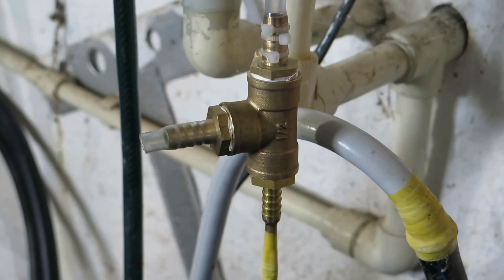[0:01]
Hi, so I need some source of vacuum. I can get some cheap vacuum pumps, obviously, but you need to maintain them if you want to use them for vacuum distillations or something like that. So I was thinking about aspirator pumps. You can buy them cheaply also, but they are very simple to make, so I made this thing.
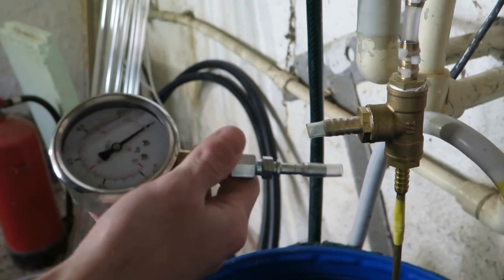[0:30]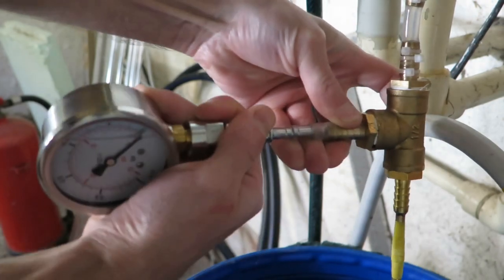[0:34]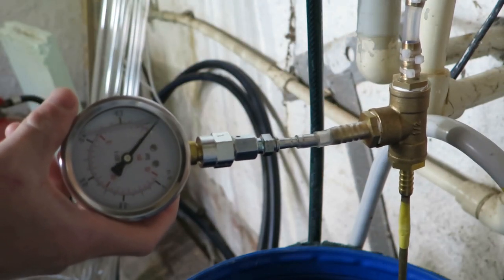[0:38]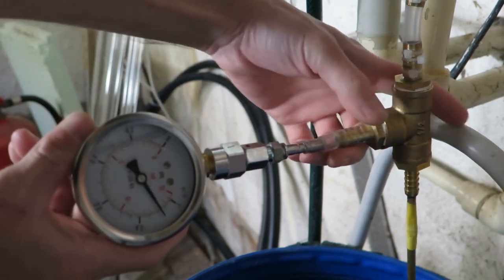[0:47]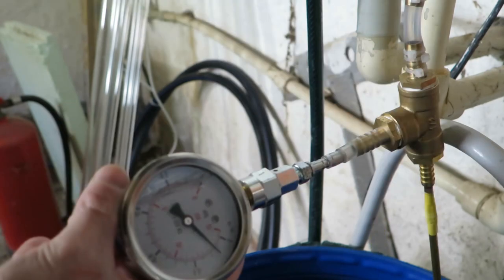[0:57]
So here I got the manometer. I will connect this just like this. It'll probably leak a little bit, but what can you do? And turn this on. And you can see that you can get quite low pressure there. As you can hear, it's very quiet.
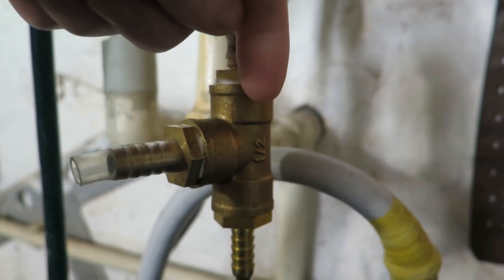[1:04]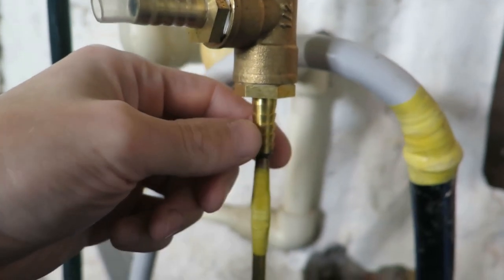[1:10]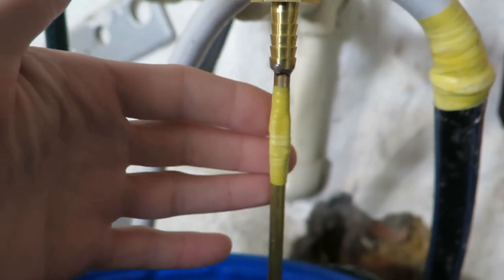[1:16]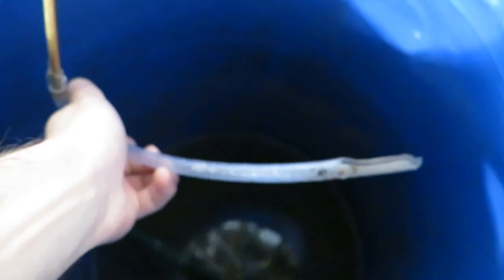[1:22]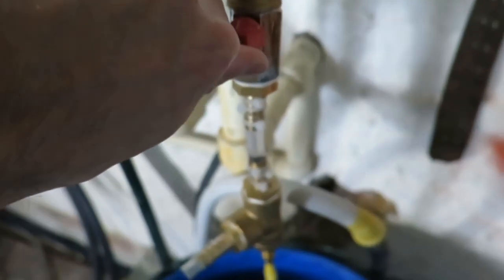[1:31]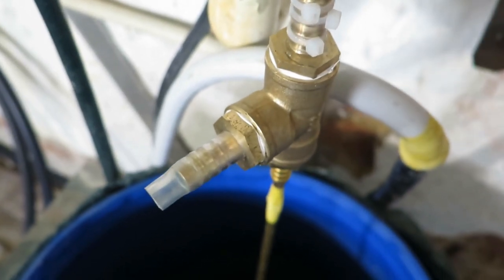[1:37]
So the way this works is you have a nozzle and high pressure water that will make a high velocity water stream, and that will pass through ideally an expanding diameter hole or tube, and then just exit through a hose to some kind of container or outside. So I can just turn the water and this thing will work. There are no moving parts, so nothing is going to break here, only the water will smell of your chemicals.
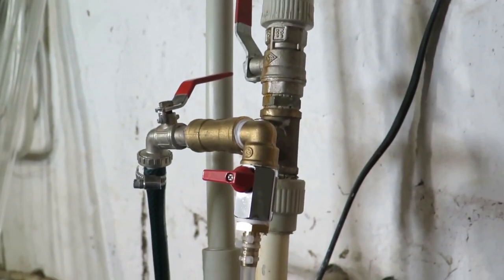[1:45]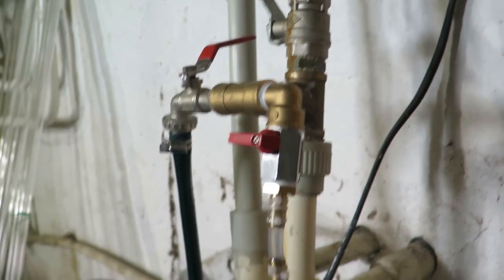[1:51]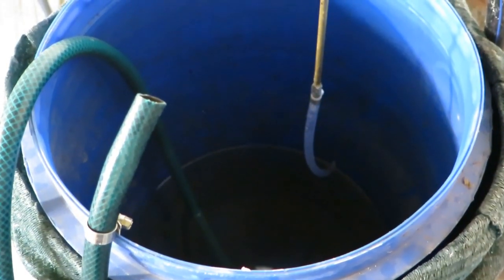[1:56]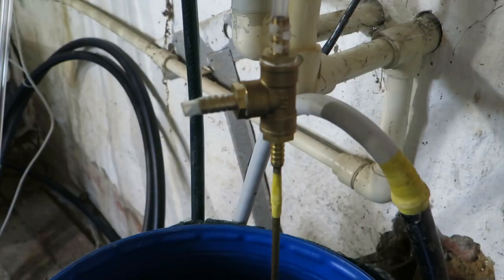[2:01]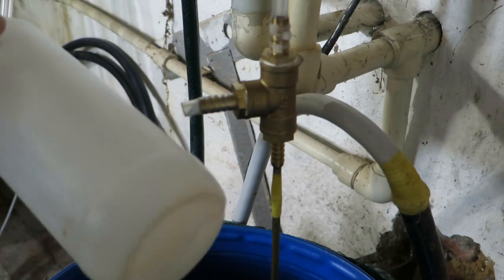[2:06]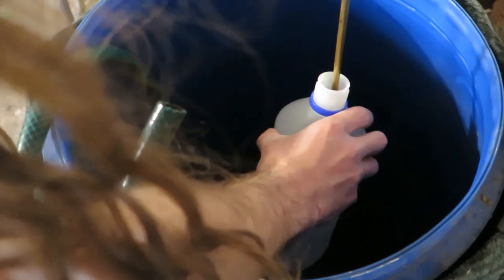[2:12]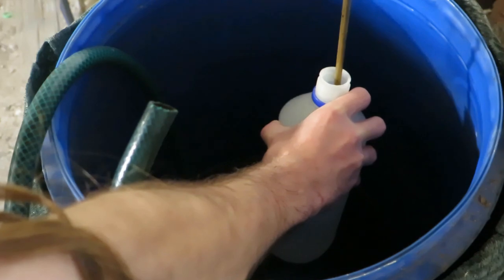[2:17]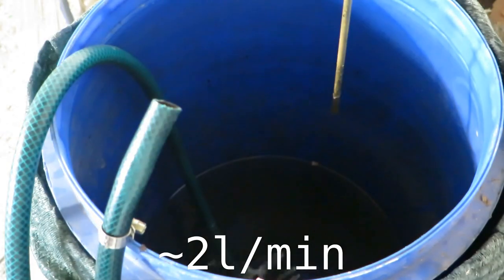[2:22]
The obvious downside with this system is that I am using fresh water basically, but you can recirculate it with a high pressure pump, but this water can get dirty. However, if you wonder what the water consumption is, I have this, I guess, 1 liter bottle. Yeah, it looks like 1 liter. So I can put this here and start this thing. Okay, that's about it.
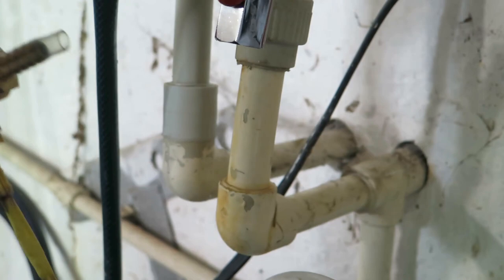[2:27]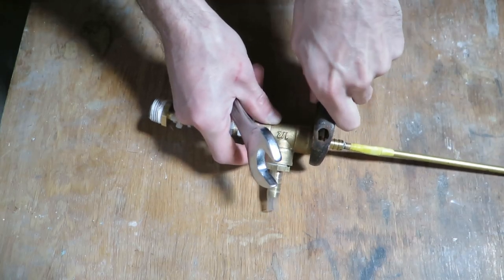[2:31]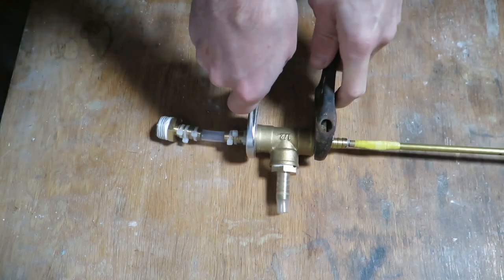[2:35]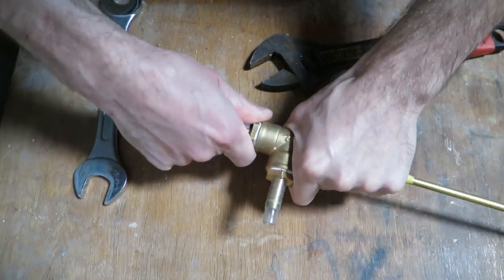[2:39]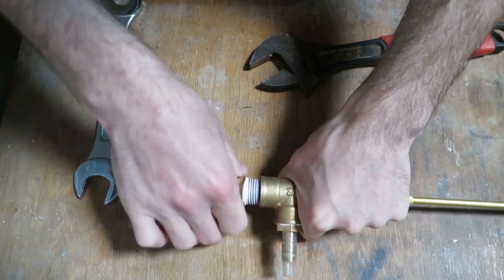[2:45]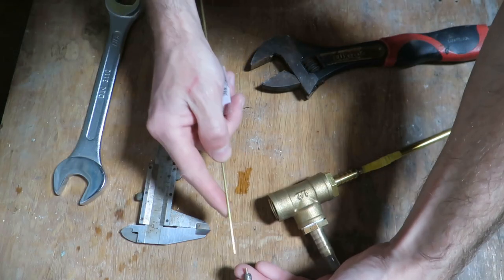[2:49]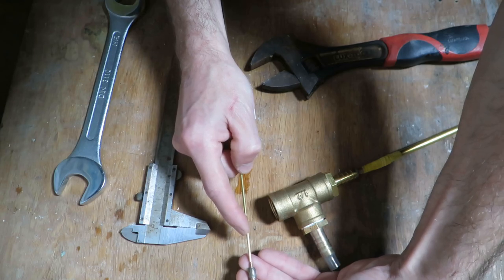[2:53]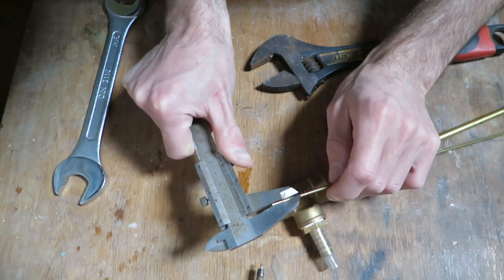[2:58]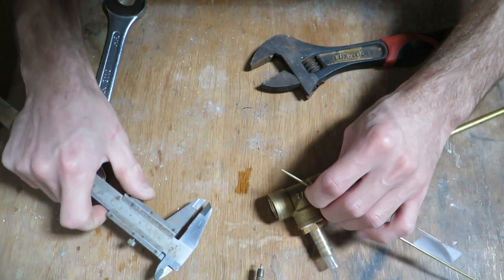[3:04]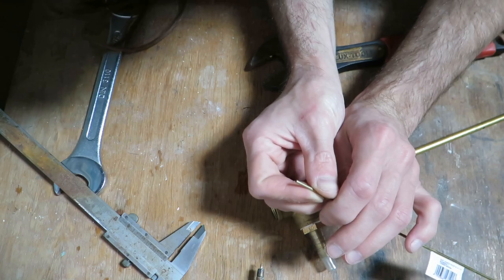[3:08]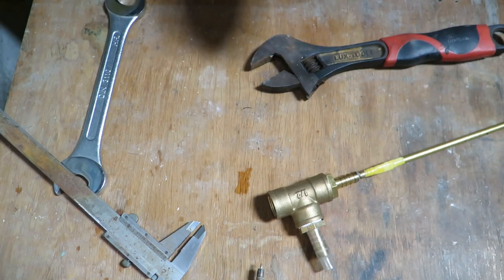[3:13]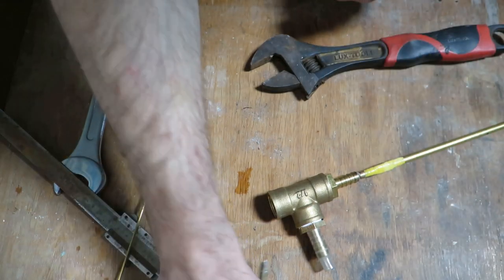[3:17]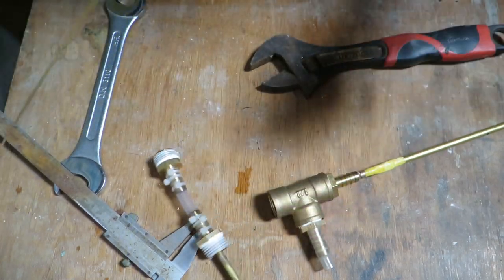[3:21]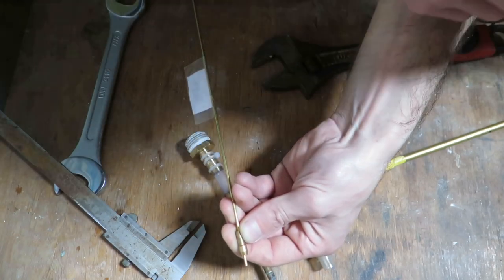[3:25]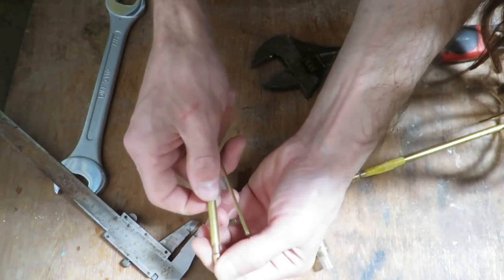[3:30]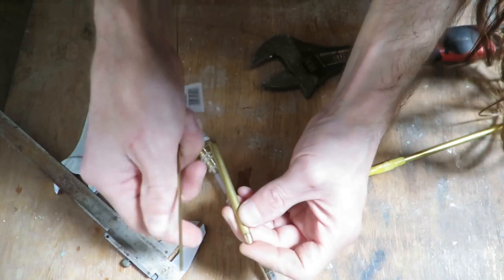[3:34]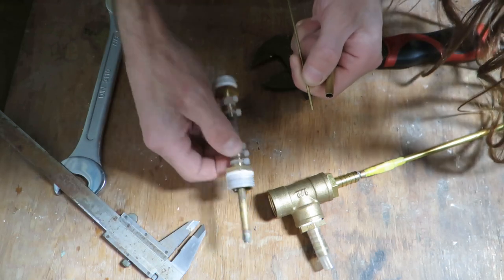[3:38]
So let's start with this thing. It seems that I have used this tube in this build, and it is 2 mm outside diameter. I'm not going to measure the inside, but it looks like 1.5 or 1.6 millimeter inside diameter. What I have done is I have threaded this tube through this thing, which is some kind of bit, and then I stick this thing inside this tube, and it is nicely centered, and I soldered the whole thing. So that's one way you can do this.
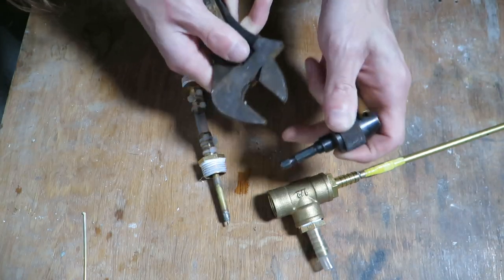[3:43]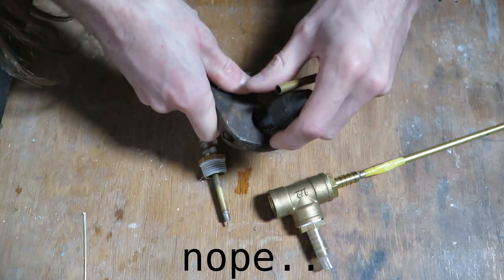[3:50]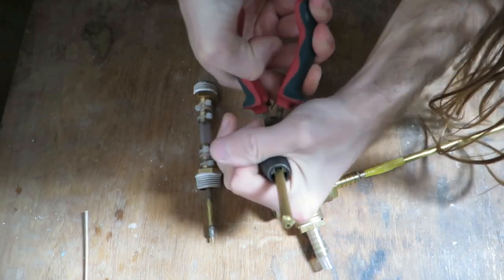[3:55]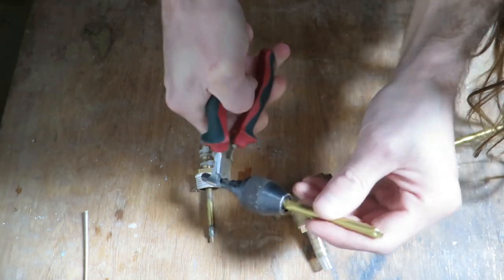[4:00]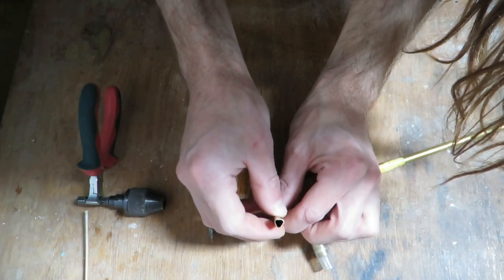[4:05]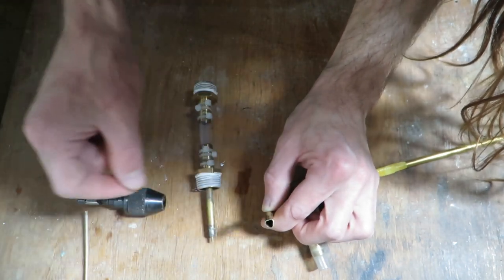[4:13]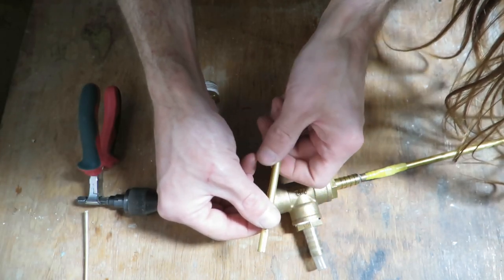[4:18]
Another option is to use this thing. Let me see if I can hold this. So I can squeeze this, and it will form a triangular hole. You can basically hold smaller diameters here, and then you can solder that, and it will be relatively centered.
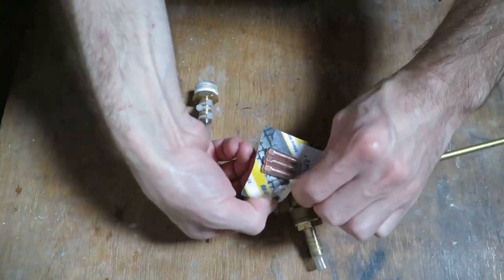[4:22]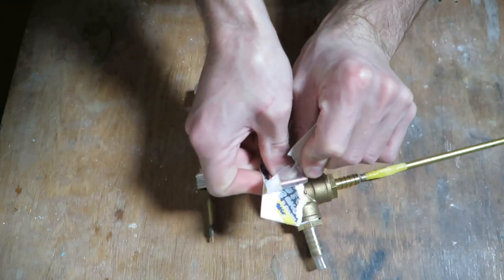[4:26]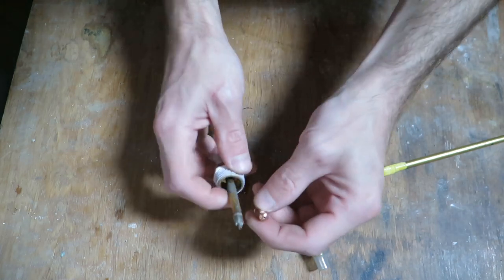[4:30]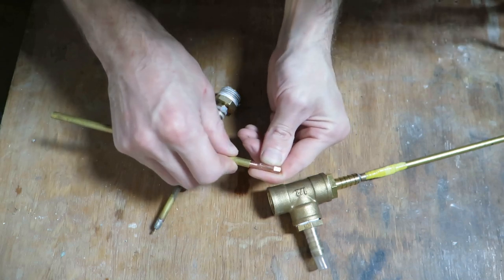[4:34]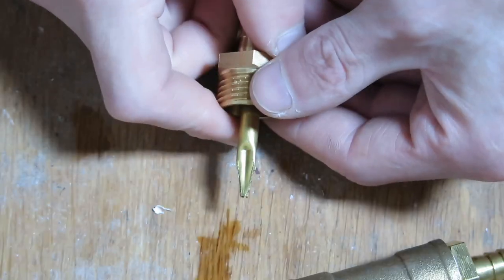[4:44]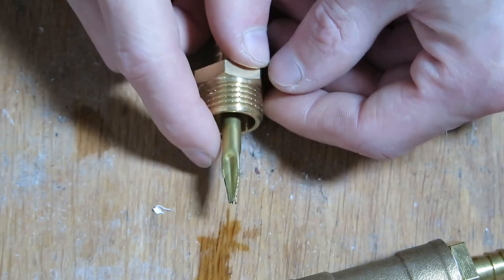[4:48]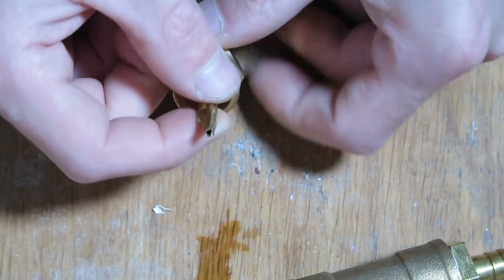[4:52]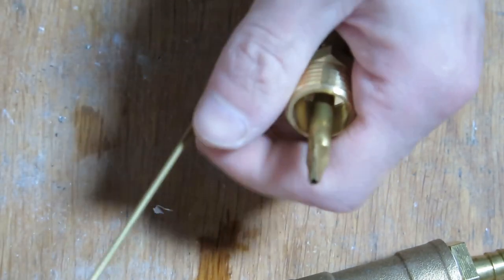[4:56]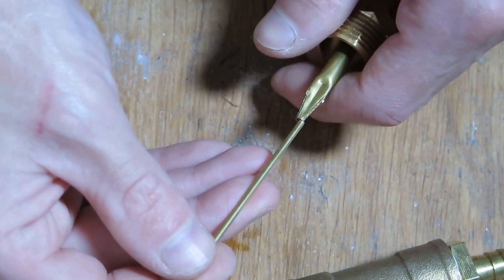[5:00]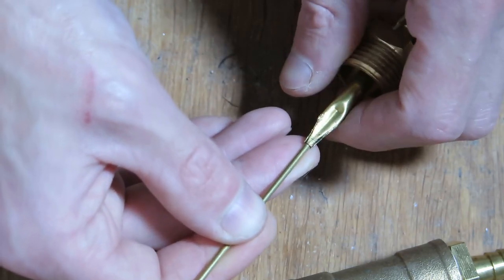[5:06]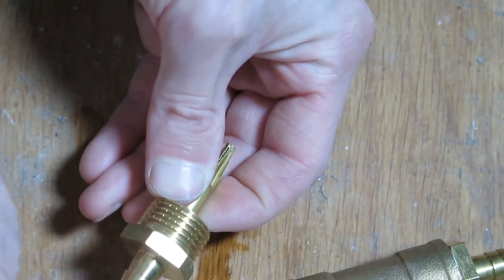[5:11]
And yet another option is to use these nozzles for a CO2 welder. The problem with these nozzles is that, A, it's a much smaller hole, and you can't really fit it in the tube properly, so you would have to machine the thread a little bit, and then you can stick it inside and solder it. Here you can see how I try to form a conical reduction between one diameter and another diameter, and I would probably try to solder this tube right here, if I can fit it there. Well, you get the idea.
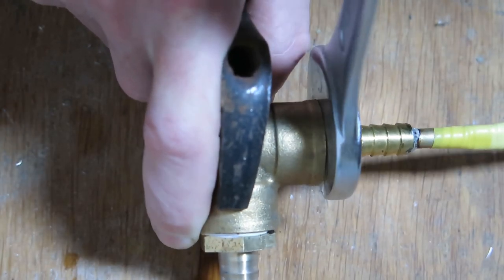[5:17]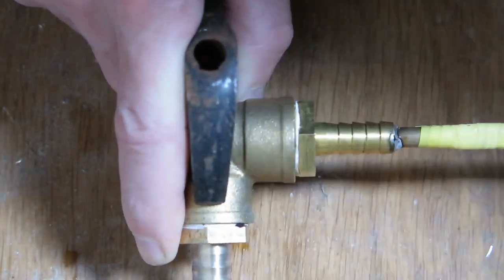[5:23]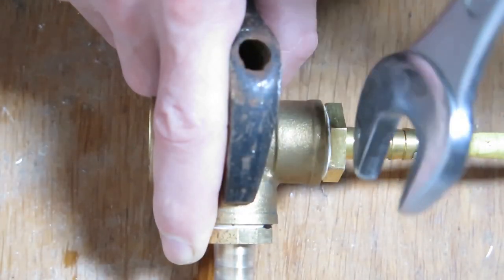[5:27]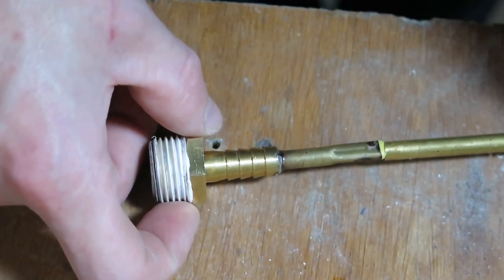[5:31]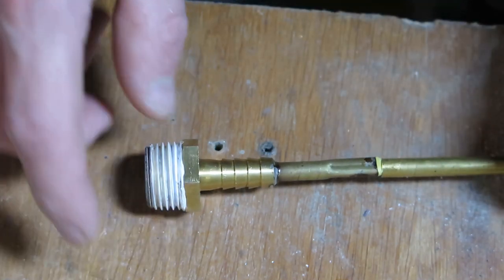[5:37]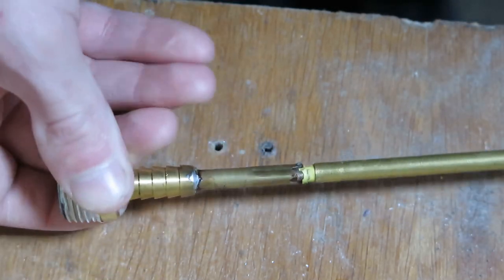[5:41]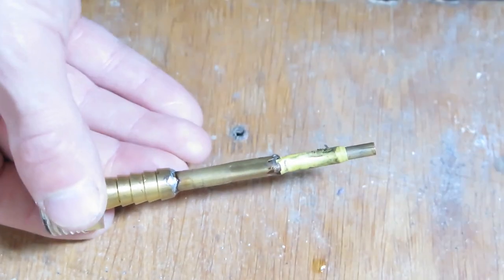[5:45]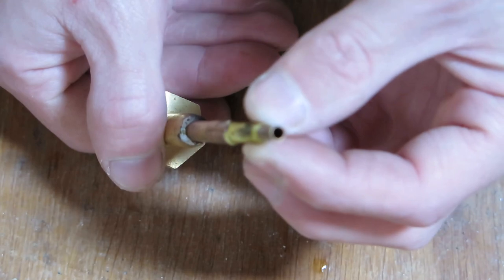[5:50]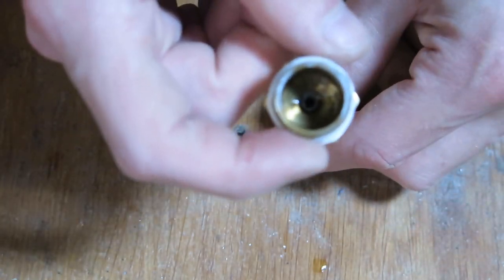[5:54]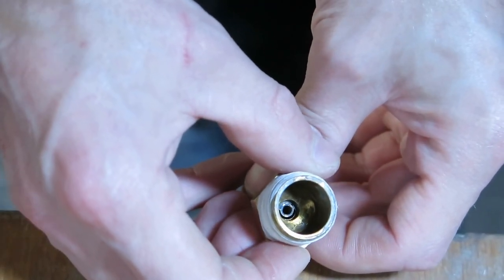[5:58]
Okay, so let's look at this thing and let's see what's going on there. This is the water outlet, basically. So I should disconnect this thing. And you can see that there's this tube, which is about 3 millimeter inner diameter. And it goes all the way through. Yeah, you can see it there.
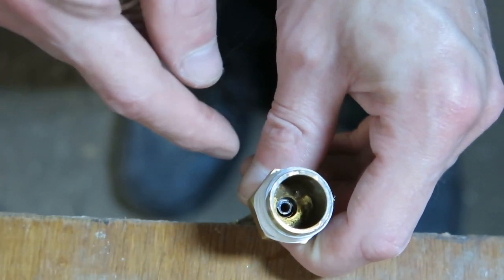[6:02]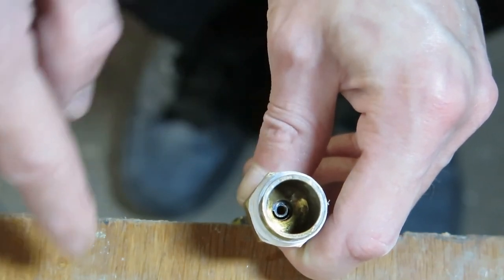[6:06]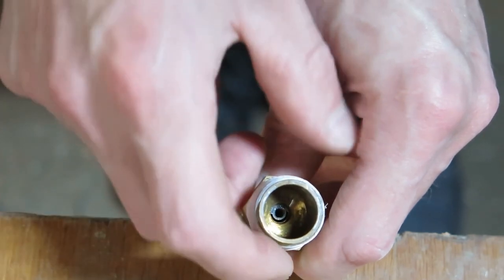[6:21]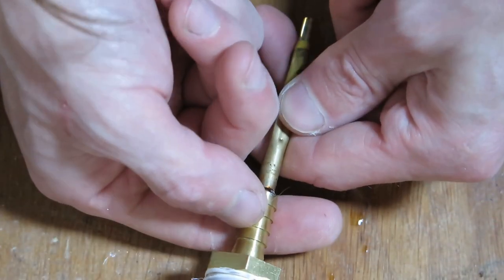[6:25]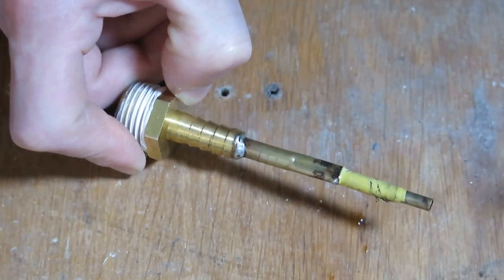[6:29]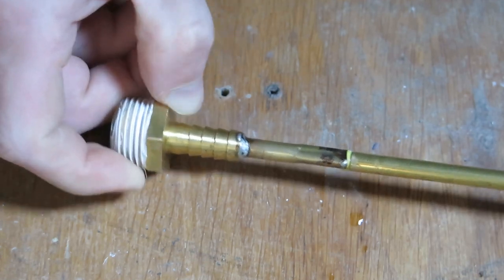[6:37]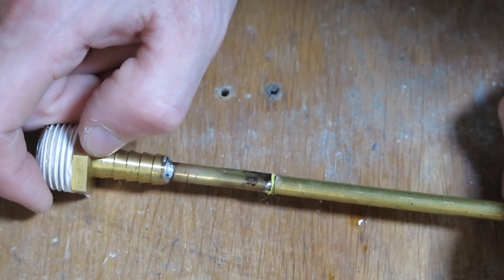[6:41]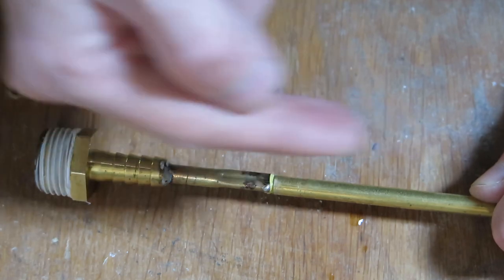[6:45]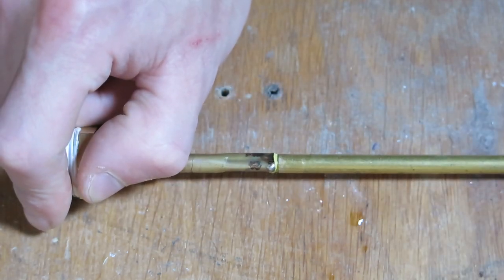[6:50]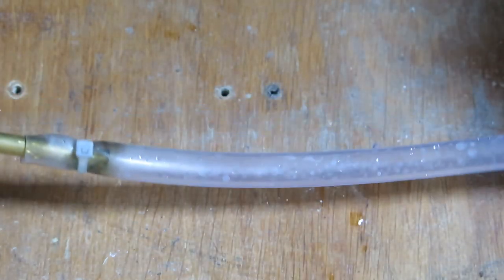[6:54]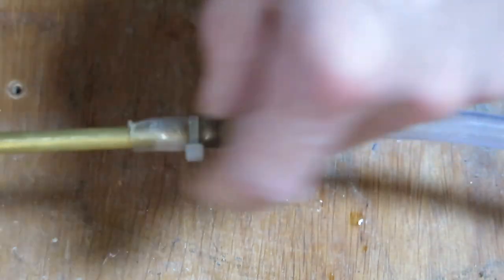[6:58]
And there's a hole. I basically put a spiral of copper wire inside, soldered it, and then drilled it so it's smooth. The diameter of that hole is about 2 millimeters, I think. This spiral wire inside is very short. Then I connected this tube, which is about 5 millimeters inside, and just wrapped some tape around so it doesn't make noises and leak in, because that could somehow impact performance. And finally there's this tube, which is not really functional, it's just to silence the water that's going out.
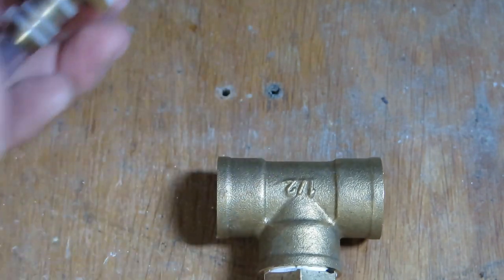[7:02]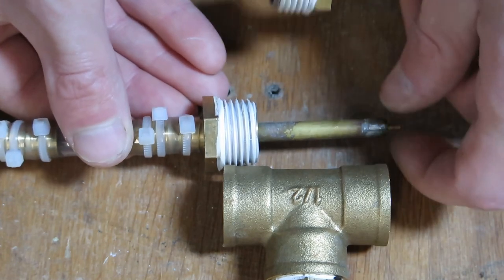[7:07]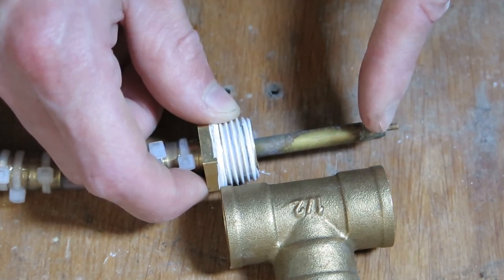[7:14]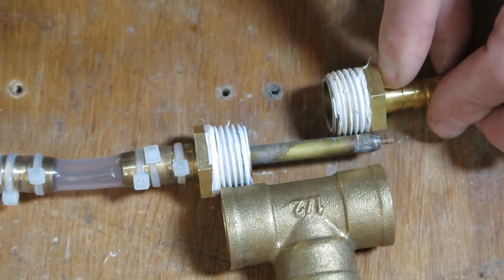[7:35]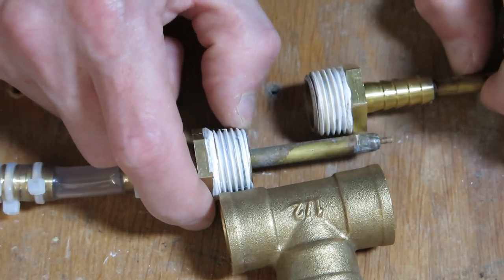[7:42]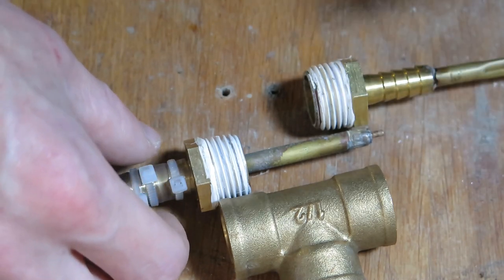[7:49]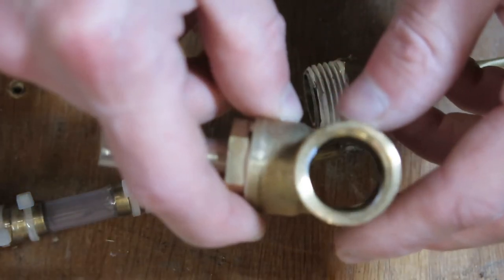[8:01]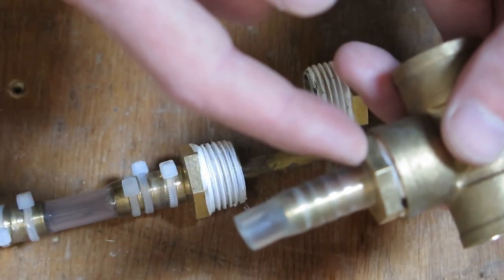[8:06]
So inside this tee there's this thing. I made this so it's a little bit longer than the length of the T-piece. And this thing was in probably like this. You can see that this thing was almost inside the hole that I made in the tube, if that makes sense. If you don't get the exact alignment really correct and the performance is really bad, you can try to unscrew this thing a quarter of a turn and look in the manometer to see what it looks like. And finally this thing is completely hollow, and this is an unmodified hose connection, basically.
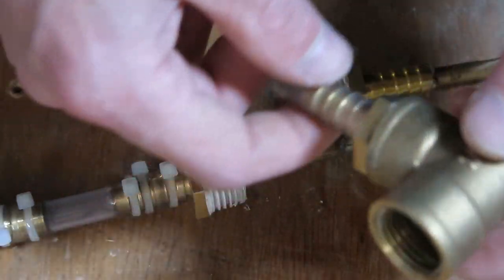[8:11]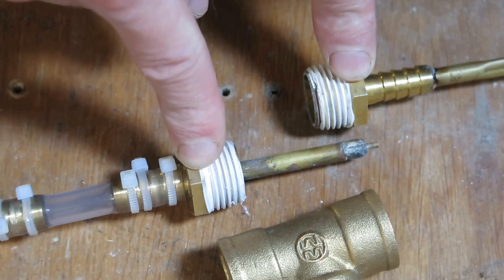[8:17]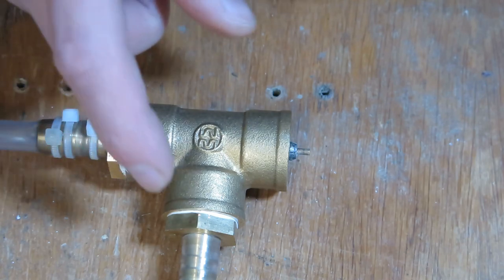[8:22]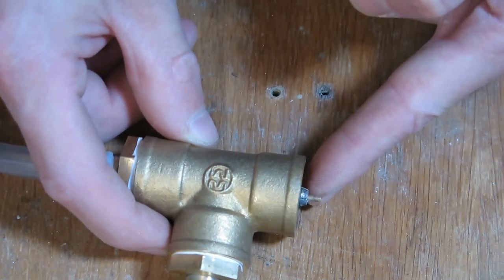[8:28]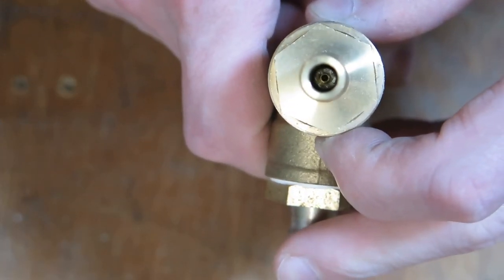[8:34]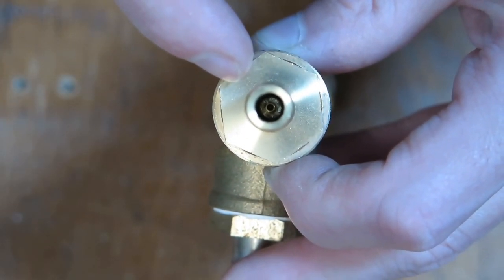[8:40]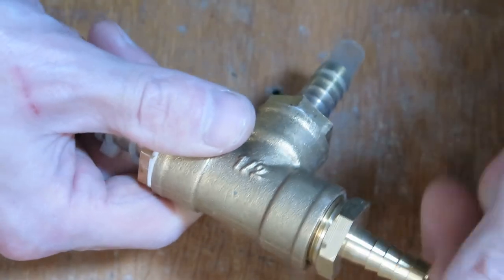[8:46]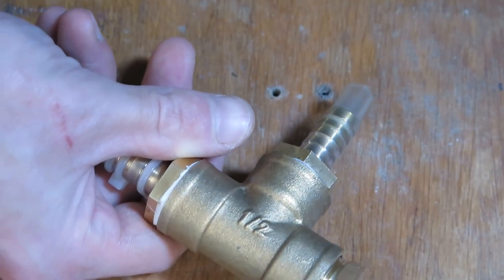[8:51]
So these two pieces are the only functional pieces that I have to modify somehow. Another thing that I would recommend is to buy another one of this fitting, because you will need to center the nozzle inside something, and it's quite easy to look from here and see how it is centered. And that's quite important, because if you splash water inside of this body, it will absolutely decimate your performance.
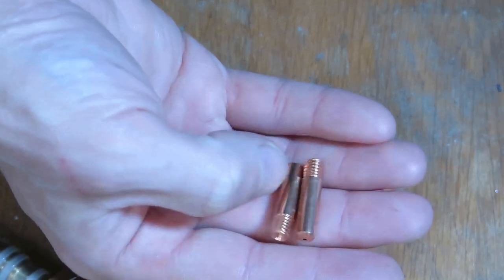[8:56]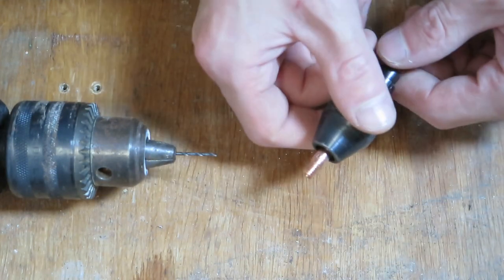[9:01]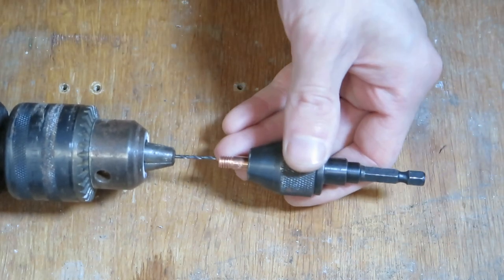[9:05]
Okay, so let me get some drills for these things and I will be back. Okay, so to make my life easier, I will hold this nozzle inside of this thing and I will drill this by hand.
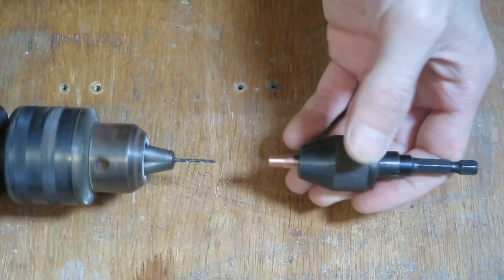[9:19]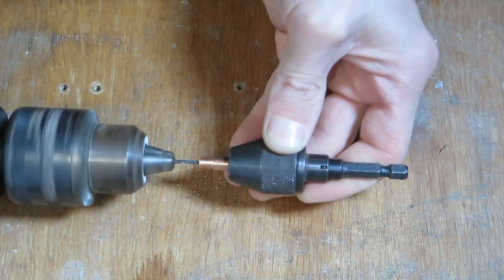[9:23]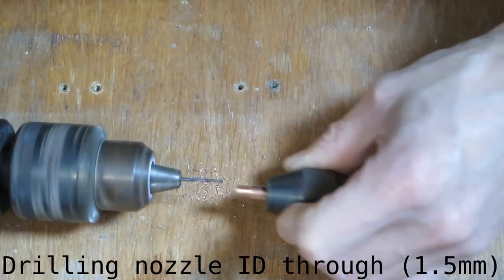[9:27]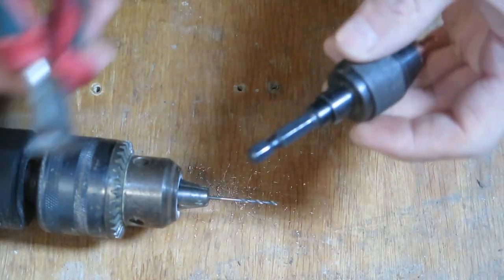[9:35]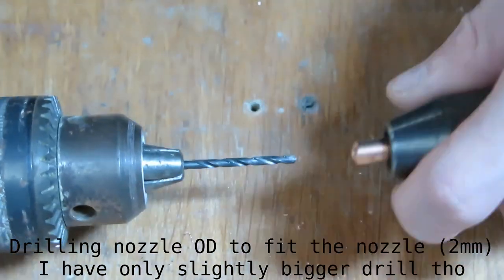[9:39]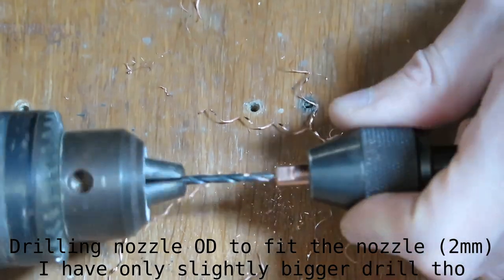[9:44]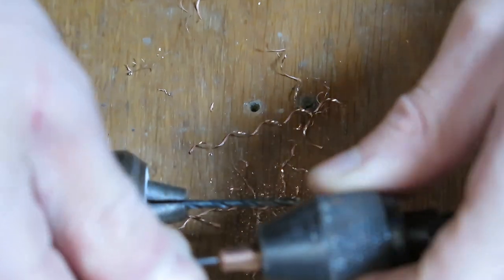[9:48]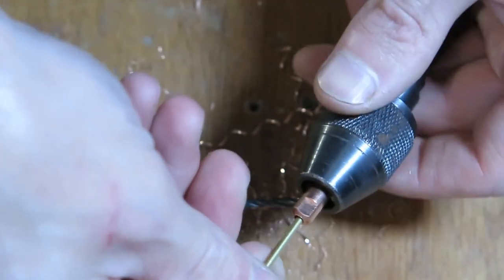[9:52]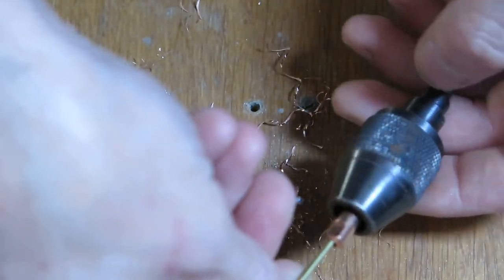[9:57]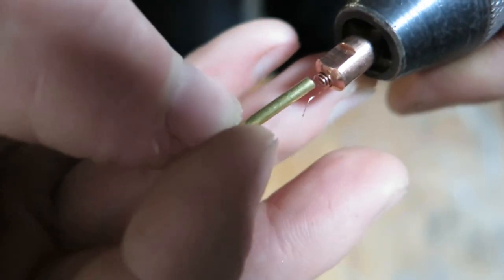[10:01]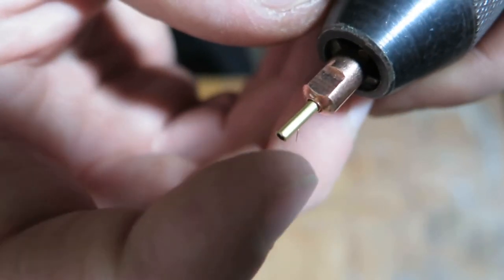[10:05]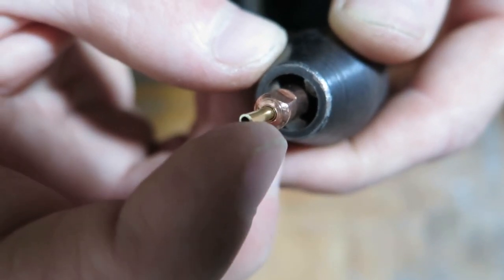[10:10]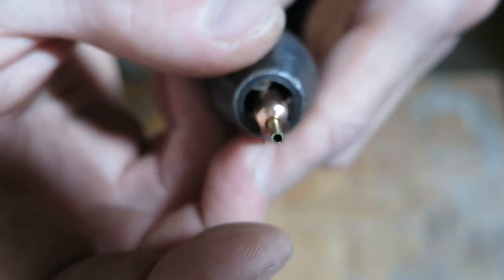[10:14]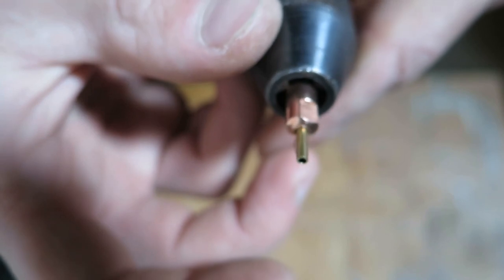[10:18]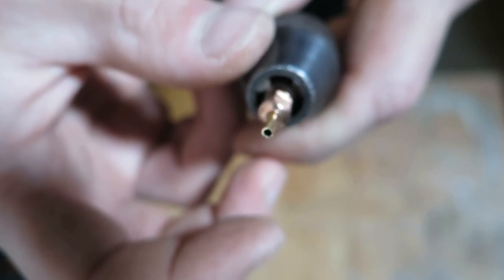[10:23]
I guess I should be true. Yep. And let's check this. Yeah, it's very bad. So I've put in a piece of wire. And let's thread this in. Yeah, it's pretty bad still, but I bet if I solder this, it will be fairly straight. So let's try to do this.
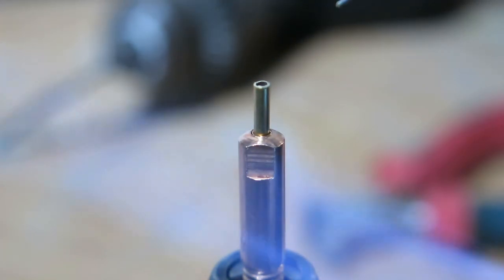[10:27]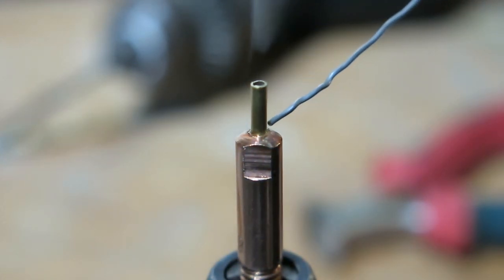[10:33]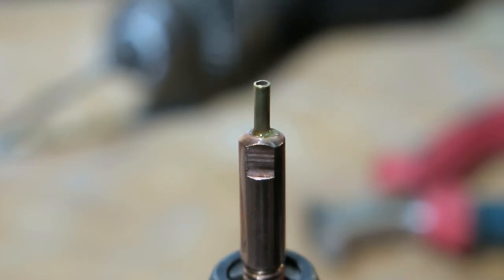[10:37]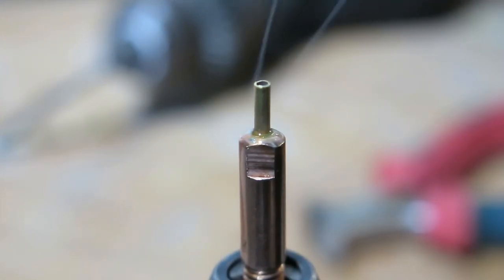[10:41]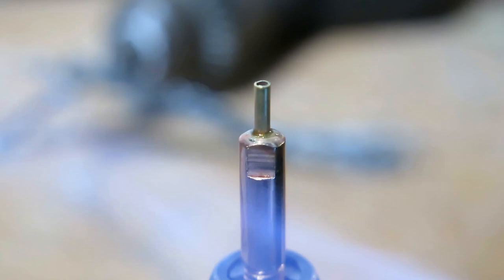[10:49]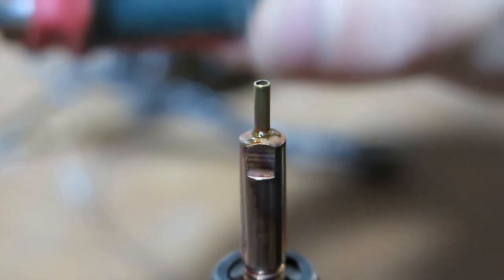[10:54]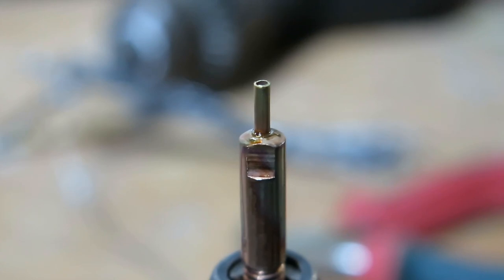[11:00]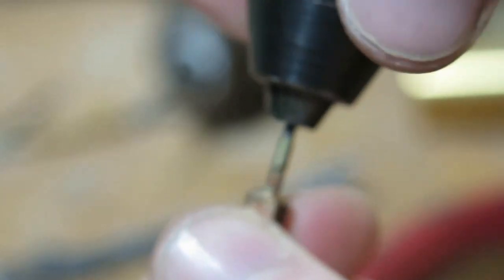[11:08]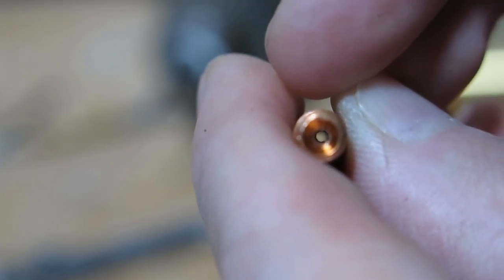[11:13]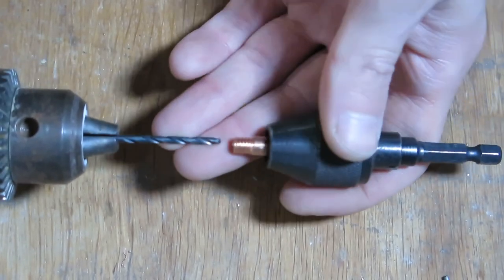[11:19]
Should be more than enough. It's quite off center, but what can you do? But I can go straight through this. So I would say this is success. Okay, so let's make the second part.
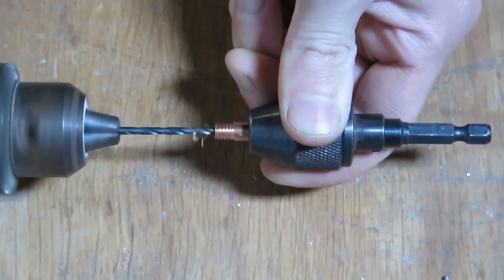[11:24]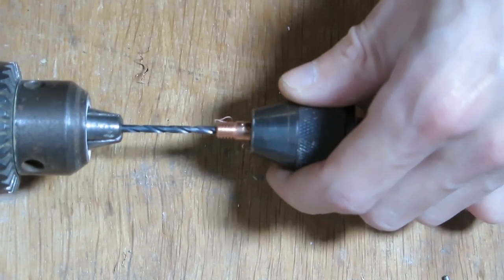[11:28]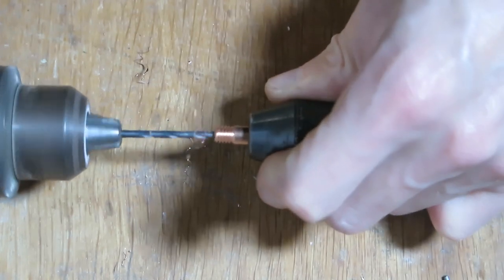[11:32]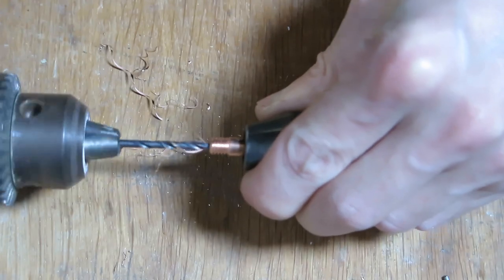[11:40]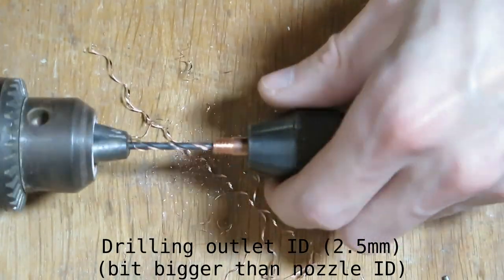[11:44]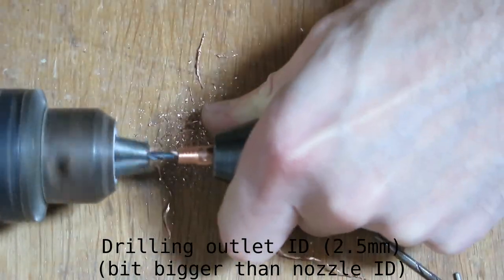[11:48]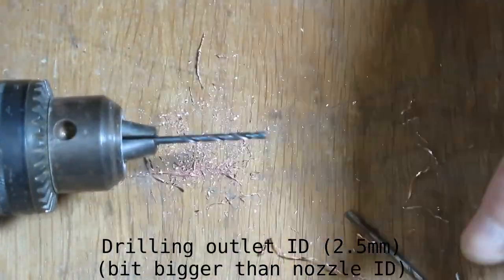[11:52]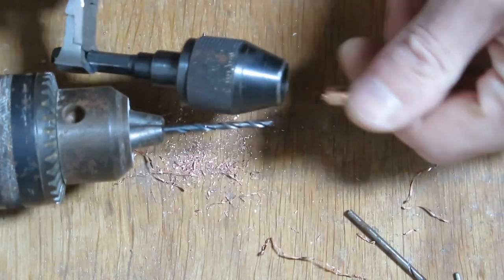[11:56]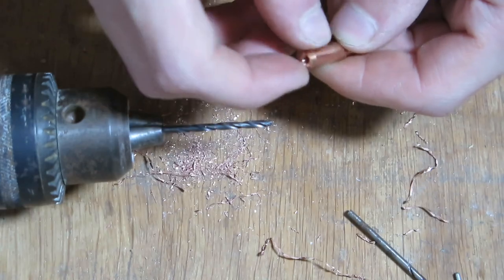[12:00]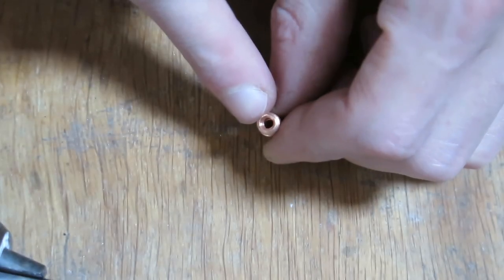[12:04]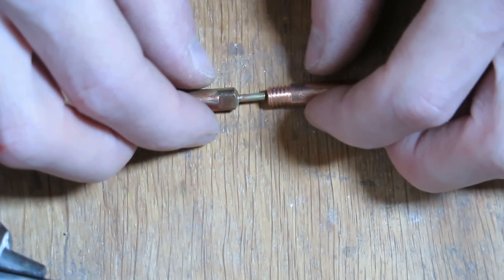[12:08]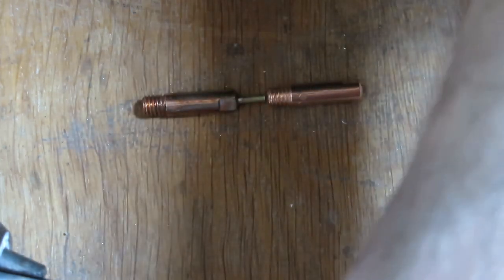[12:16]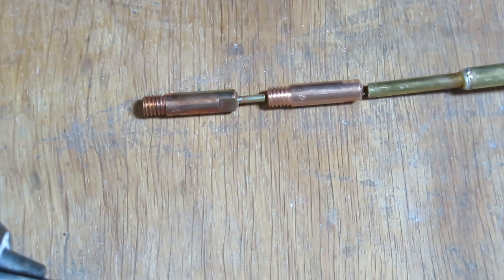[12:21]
Okay, I think I might be through. Yep, very nice. Okay, so this is the final hole basically on this thing. So this should be our configuration, about like that. And everything else should be around this thing. So I need to drill a bigger hole there and put this tube through it, about to the half of the thing, or whatever. Probably the less the better. So I guess like 5 millimeters. And this does not really have to be centered at all, so that's very nice.
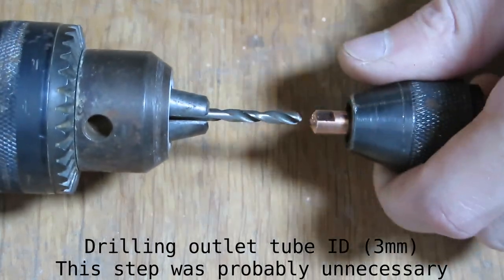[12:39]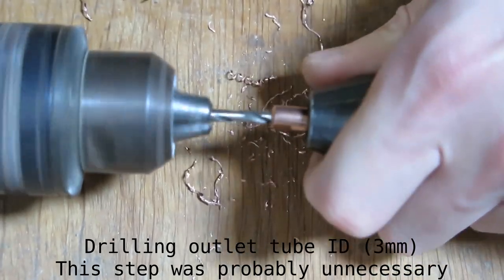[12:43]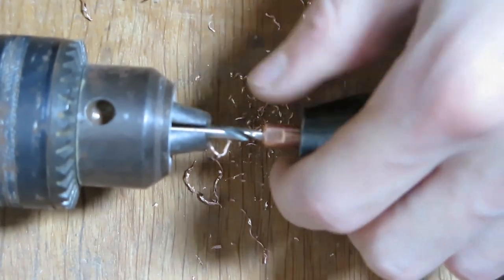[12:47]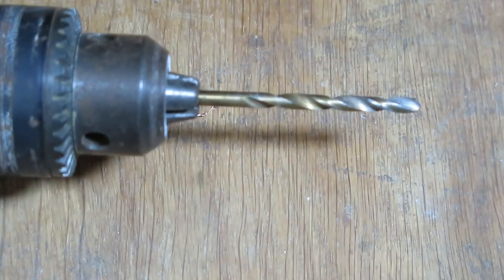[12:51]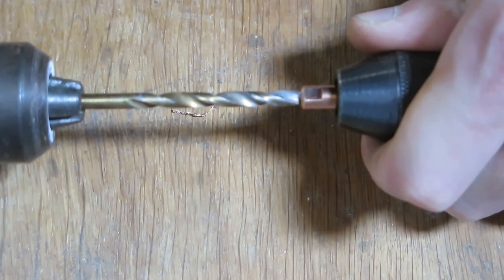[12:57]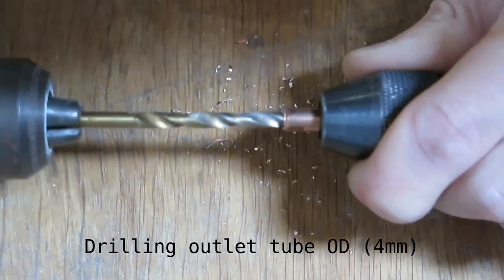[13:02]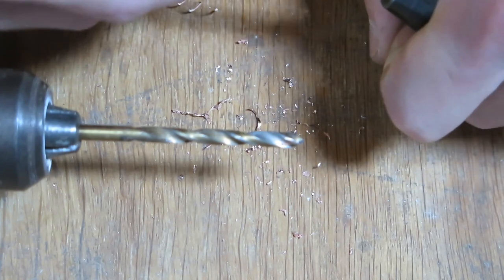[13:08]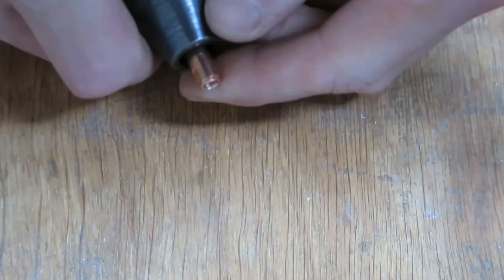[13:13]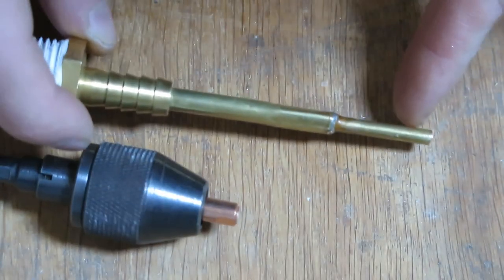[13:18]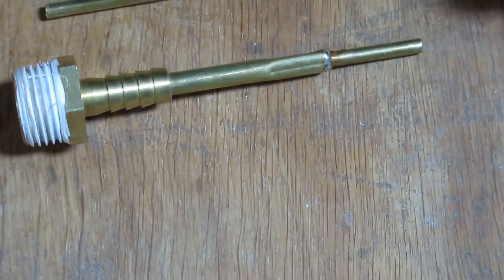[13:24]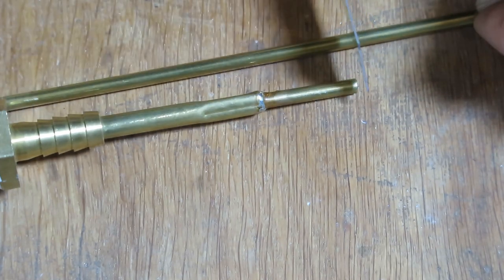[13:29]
Yeah, okay. And here goes the tube OD. This will be interesting. Okay, and how it looks like. Yeah, it will need some pressure, but it will go there. Okay, so I think we are pretty much done drilling. So now I need about this length of this tube. So, okay, about that much.
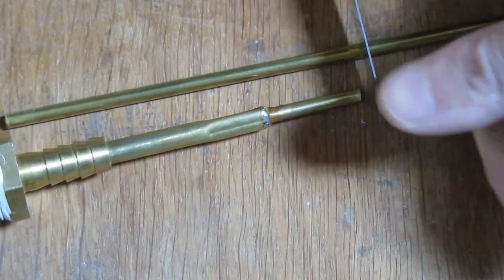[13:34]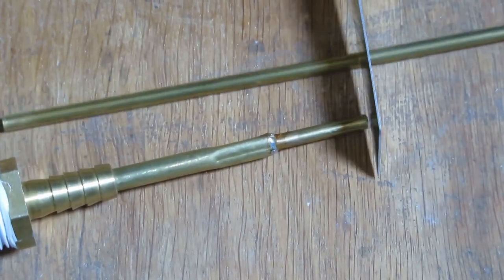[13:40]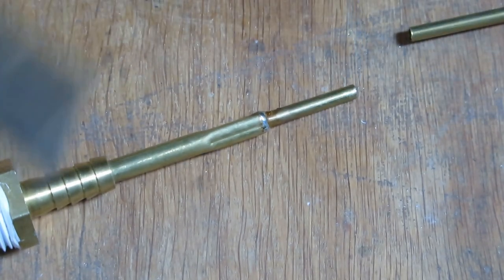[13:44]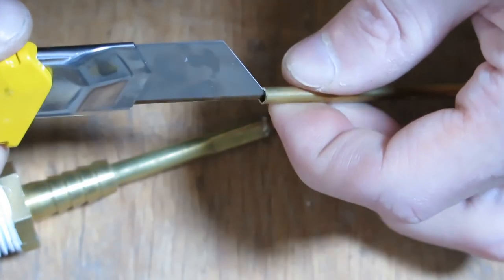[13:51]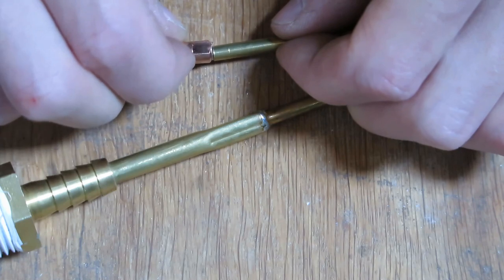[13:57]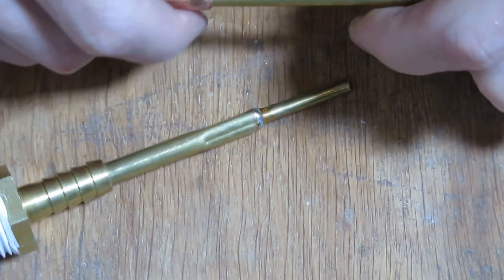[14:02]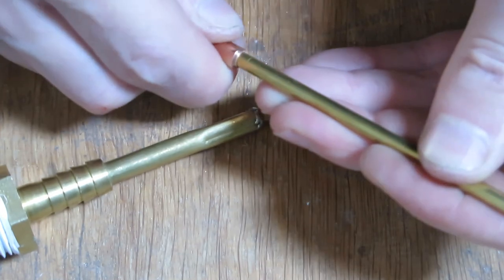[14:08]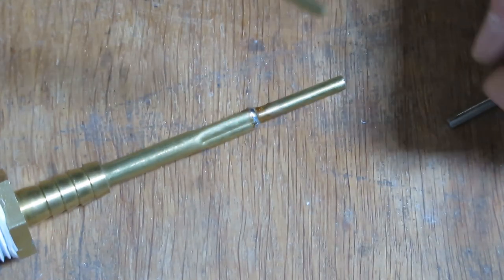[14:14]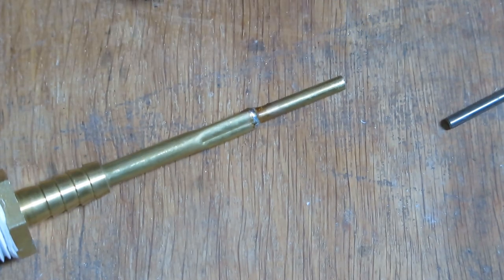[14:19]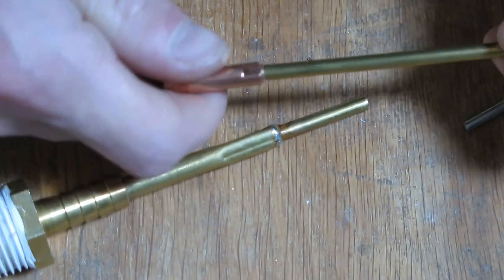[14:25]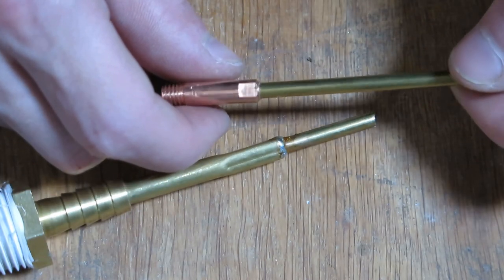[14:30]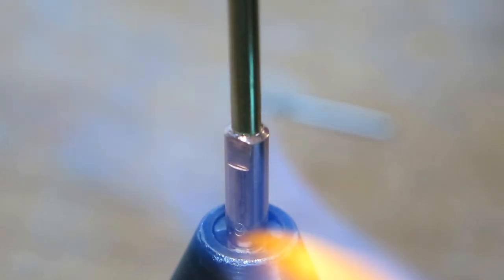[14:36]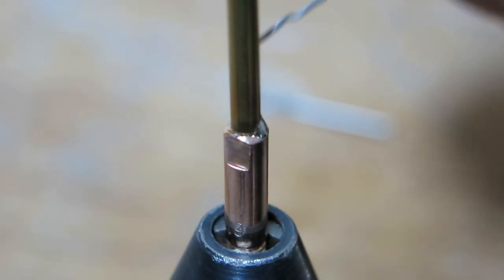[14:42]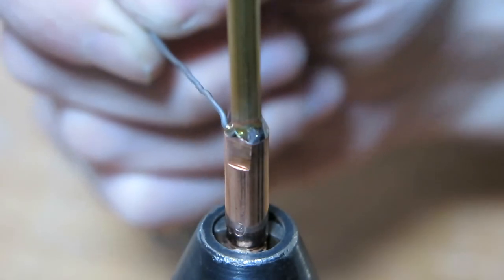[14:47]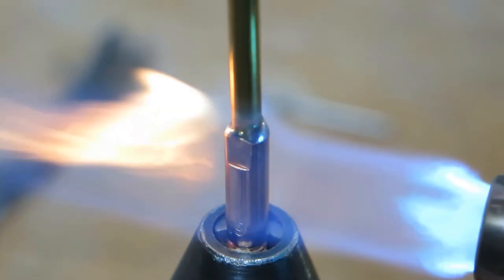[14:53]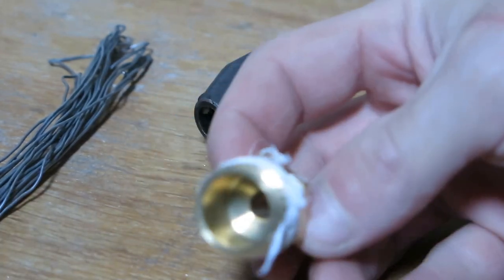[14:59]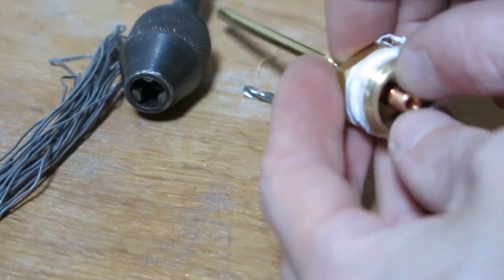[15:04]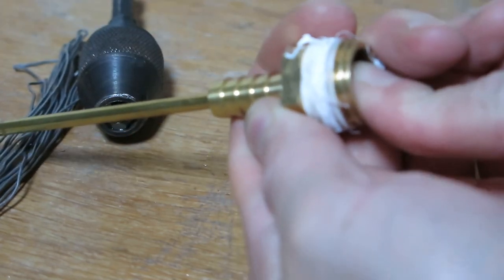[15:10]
Okay, we'll clean inside a little tiny bit. Yeah, so we will push this inside. This will probably require a little bit of percussion. Well, looks like it's not the straightest thing in the world, but I bet it will do the job. Now take this fitting and stick this whole thing in there. It'll take a little bit of force, but it should go there.
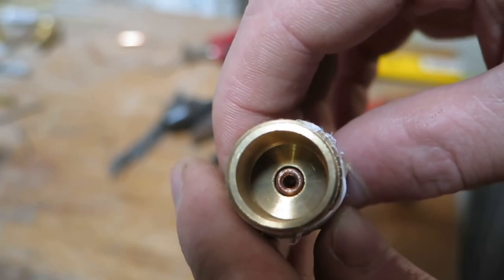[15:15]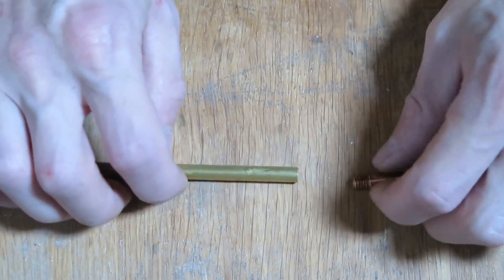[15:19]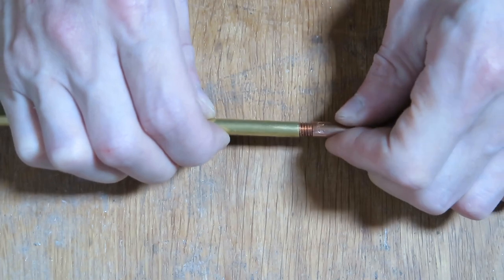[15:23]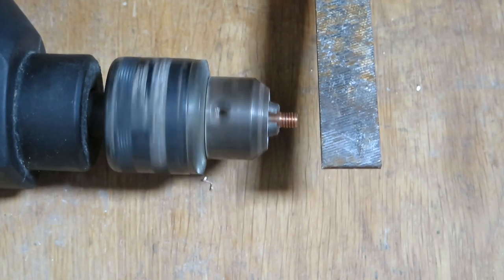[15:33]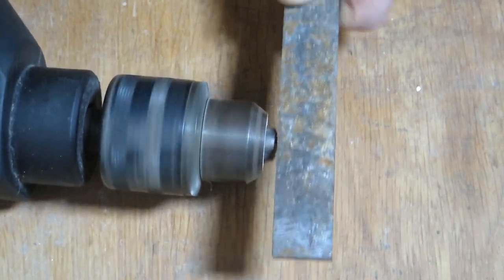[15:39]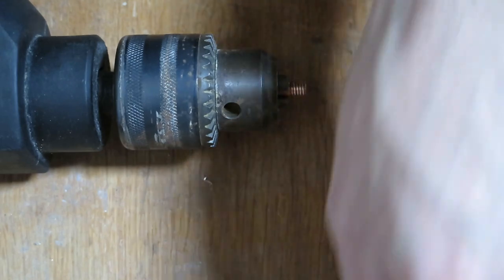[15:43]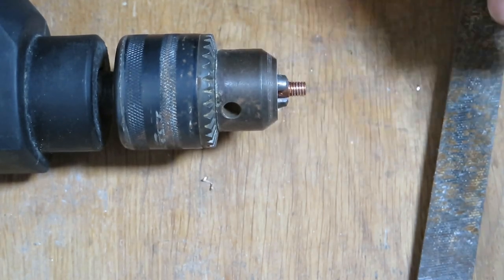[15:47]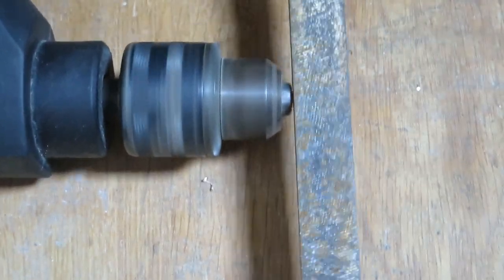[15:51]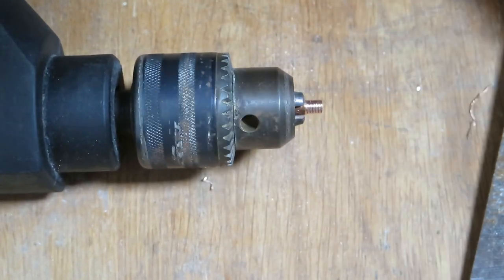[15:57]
Alright. So here you have it. Okay, so now we need to connect these two things, but there's thread in the way. So that sucks, and we need to remove it, at least part of it, until it fits. It's turning wrong here. Guess this should work. Yep, seems perfect.
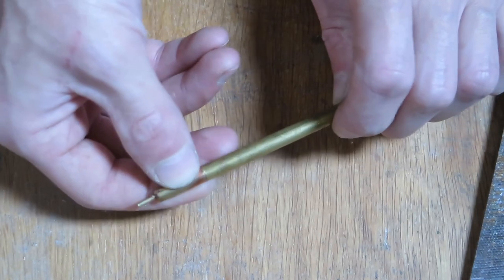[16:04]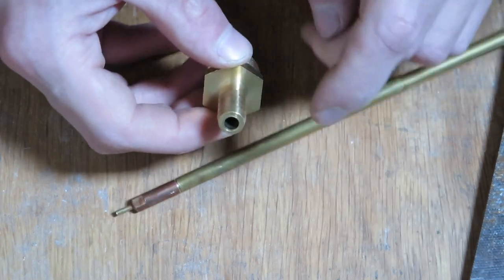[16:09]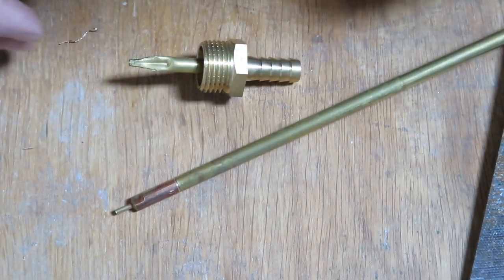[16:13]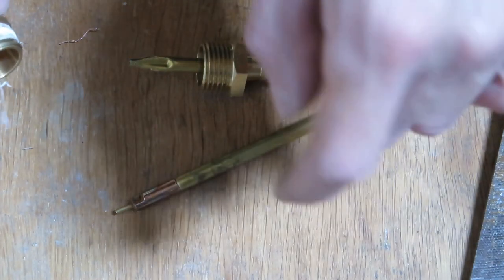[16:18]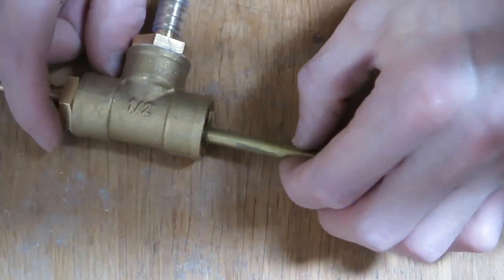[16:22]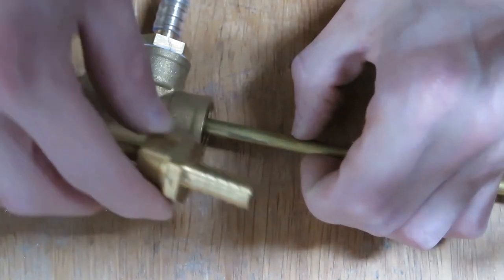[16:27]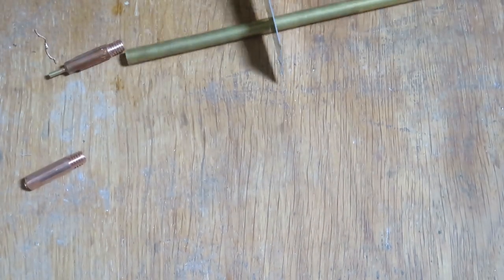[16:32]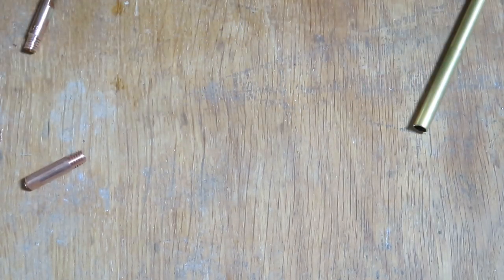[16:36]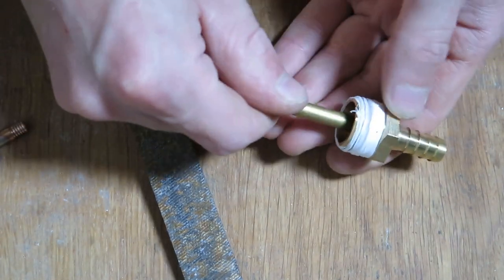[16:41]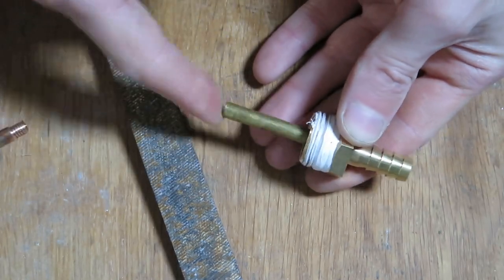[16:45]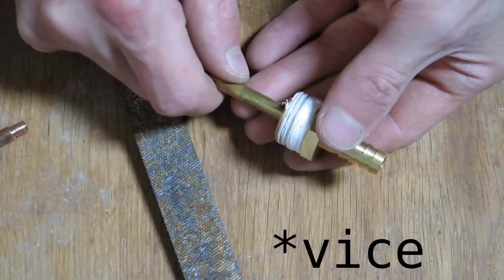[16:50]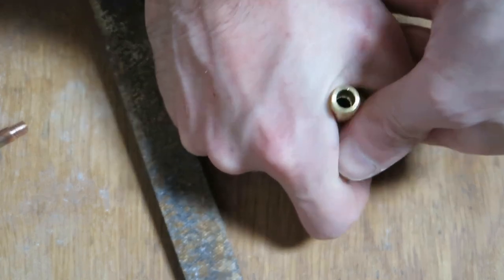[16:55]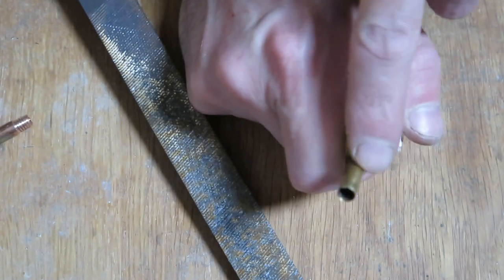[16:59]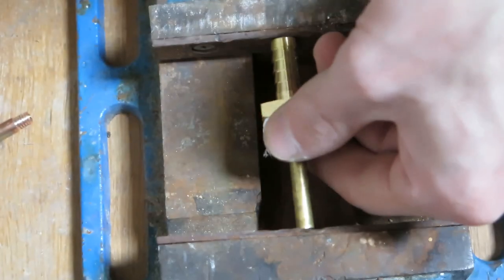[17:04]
Okay, just before I solder this together, I will cut this and press it into the fitting. And I will need about, well, that's a good question, so, right, I will guesstimate how much I need. Yeah, about that much. Okay. I guess I got lucky because this one is going in almost by hand. Sometimes you really need to press this together very tight, like with a chuck or drill press. But I think that I can push this with my hands almost. Maybe you can use percussion, but be gentle on that edge. I will use a vise, because it's easier to fit in frame, and I don't have to move the camera.
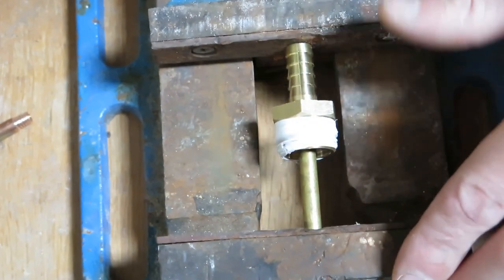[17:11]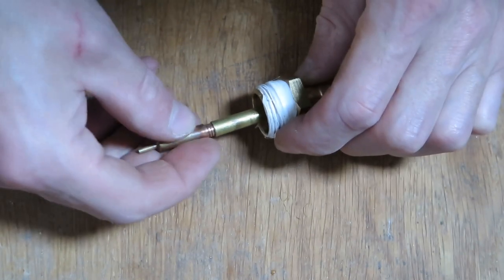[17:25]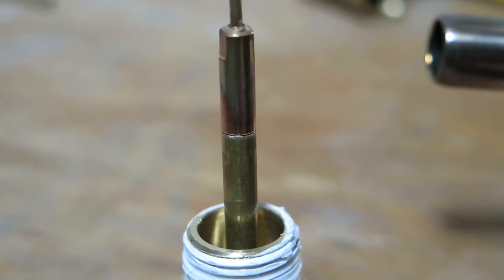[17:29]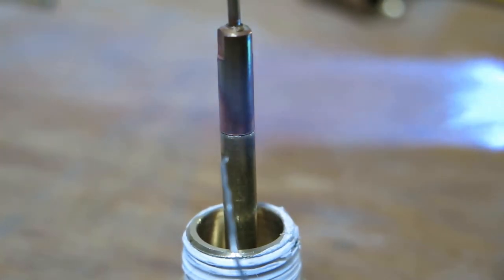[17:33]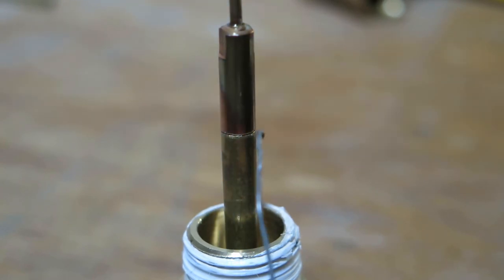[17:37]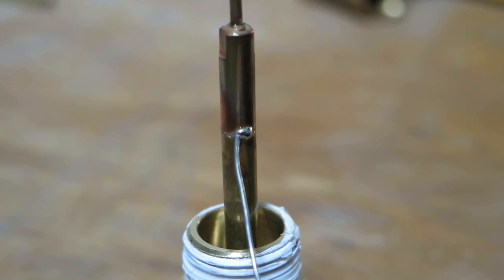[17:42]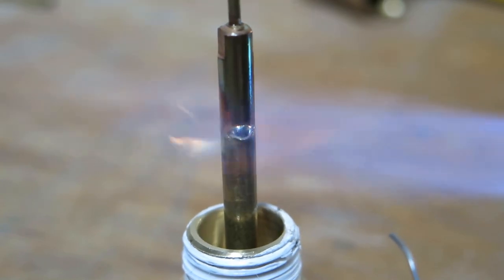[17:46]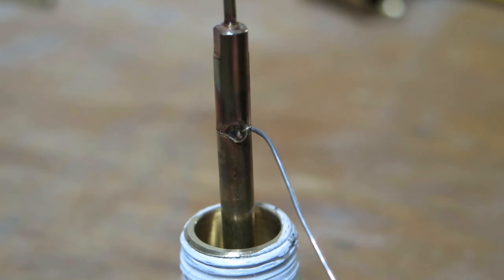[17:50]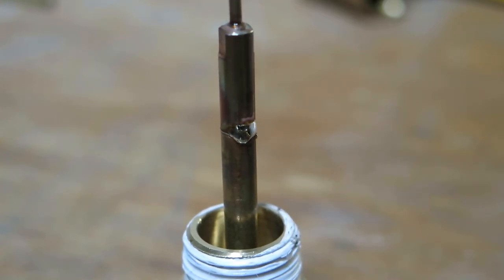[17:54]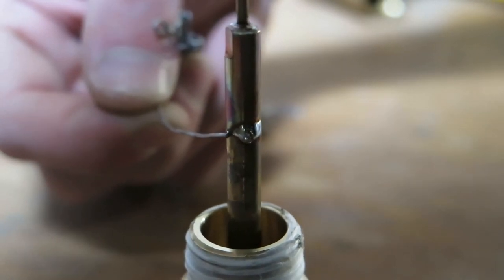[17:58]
Yeah, it's getting a little bit tighter. Oh, we are done. Okay, so now we can finally solder this thing together. Right, I still need to heat the copper more this time, so... Oopsie... I should... Should clean up the brass a little bit more. This is not looking very... very nice.
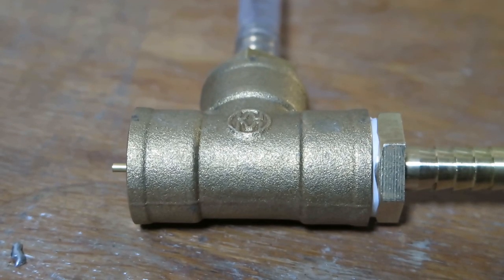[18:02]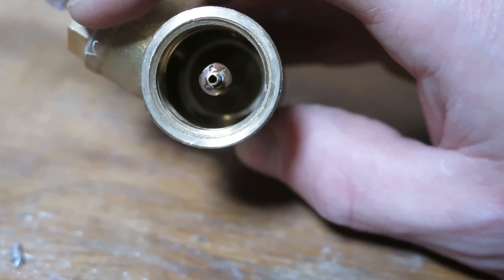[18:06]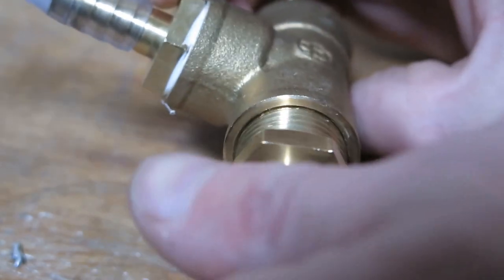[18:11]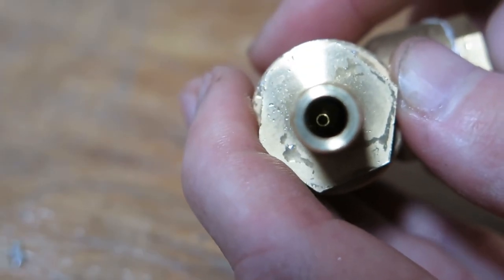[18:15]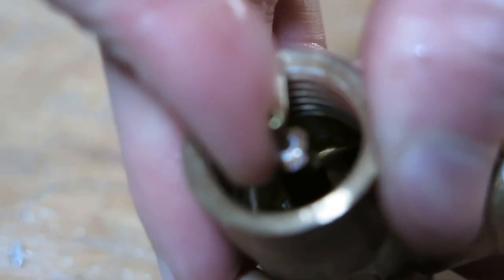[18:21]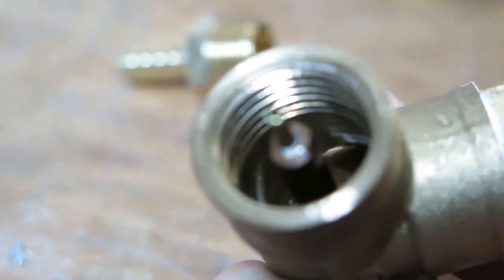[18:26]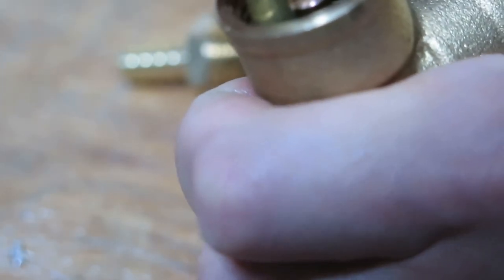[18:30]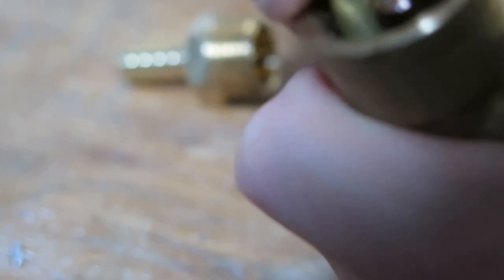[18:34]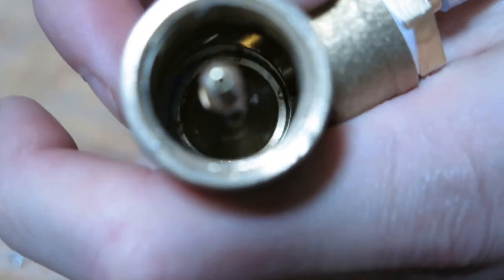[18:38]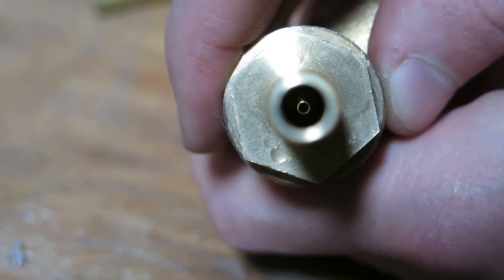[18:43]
Okay, so far this looks quite okay. Doesn't look very centered, but we can fix it. But first let's have a look how much centered it is, or is not. Yeah, so you can see it's pretty much off-center. But we can fix this, and that is by sheer brute force. Simply pull this thing to the side. Probably spray it with some tool, and that's it. Science. I would say that's quite centered. Maybe it will need a little bit more, but looks good for me.
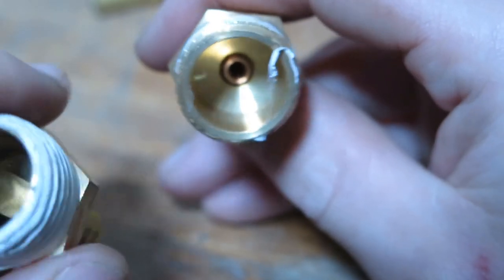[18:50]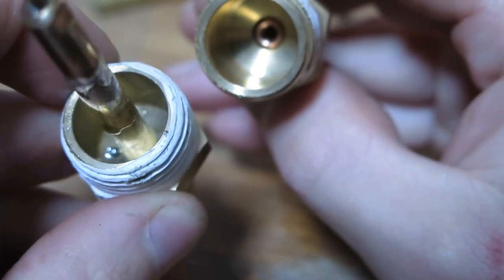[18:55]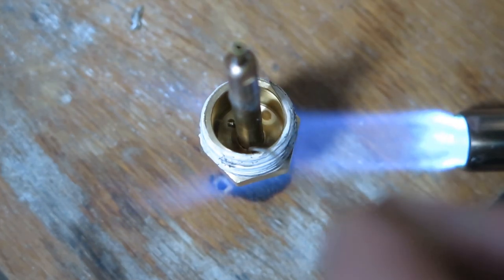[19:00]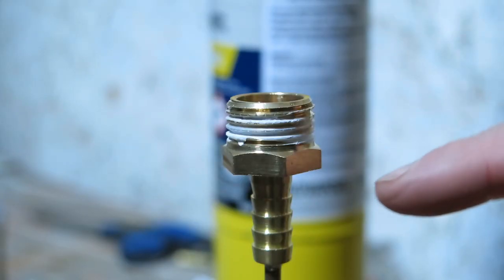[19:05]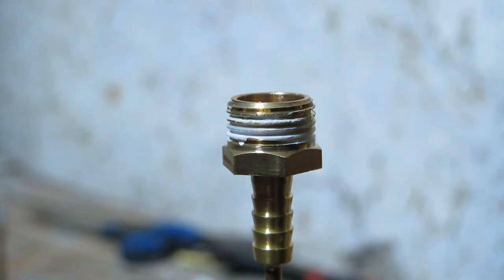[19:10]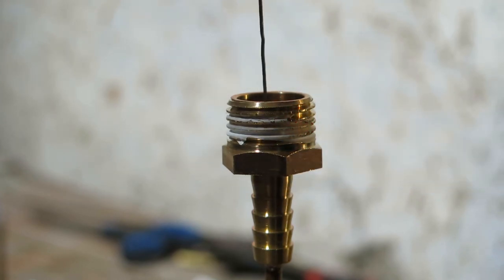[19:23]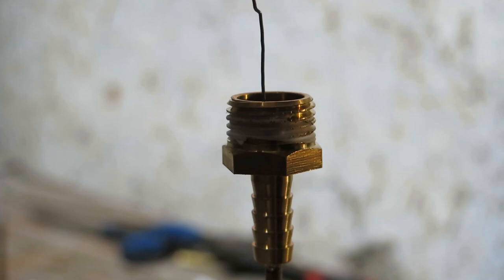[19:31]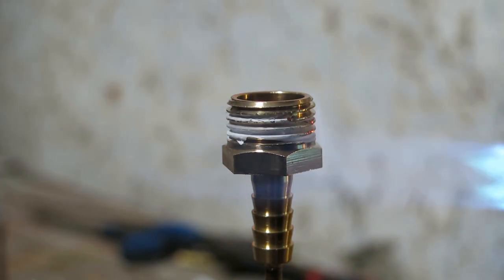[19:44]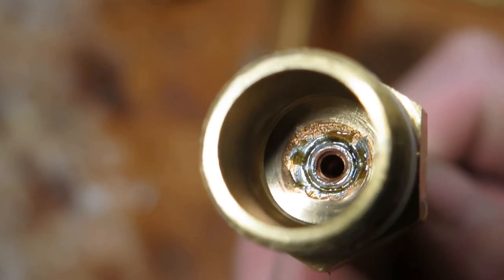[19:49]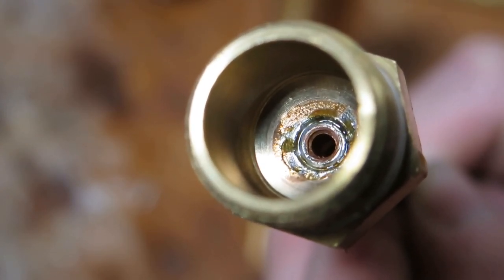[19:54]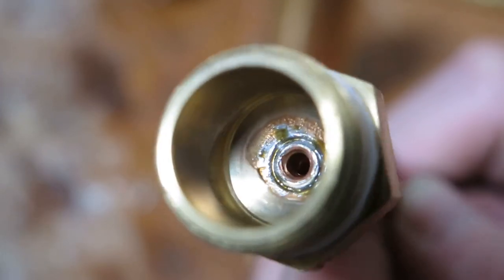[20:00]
But before we even test this, we will need to solder inside there and there. Worst case, this whole thing will slide down. That would be quite terrible. Okay, looks good. Yeah, so this is what it looks like about. You should not touch the inside of the copper thingy that we have there. But I guess nothing terrible would happen.
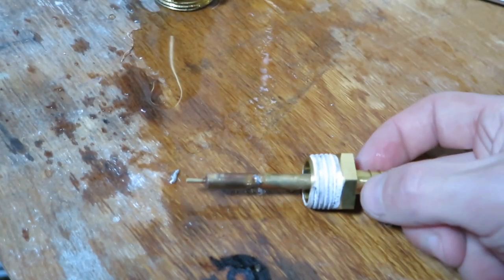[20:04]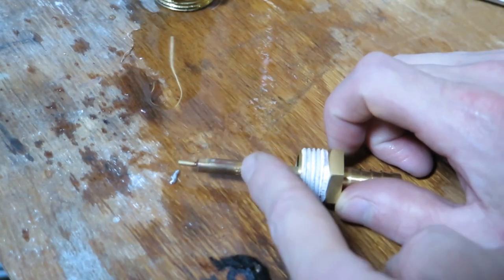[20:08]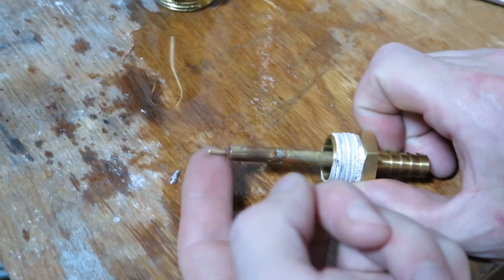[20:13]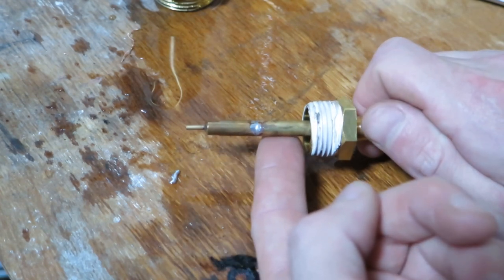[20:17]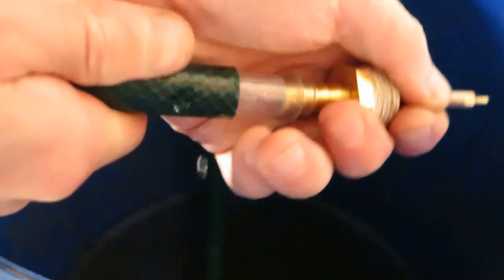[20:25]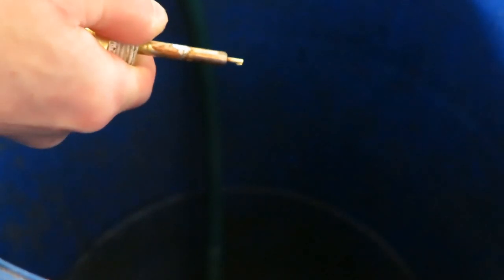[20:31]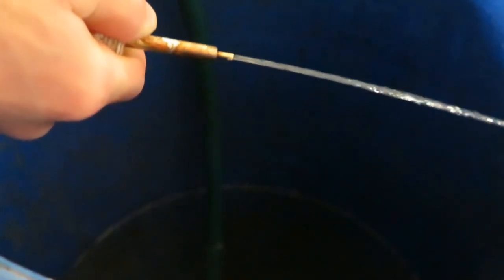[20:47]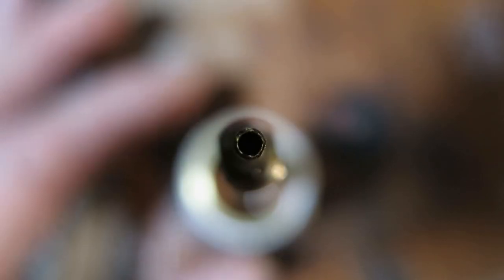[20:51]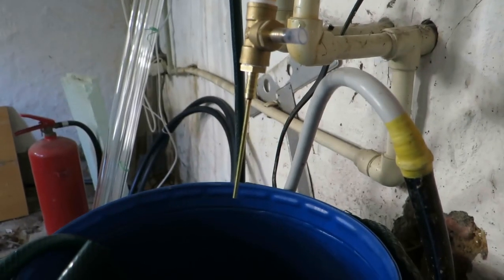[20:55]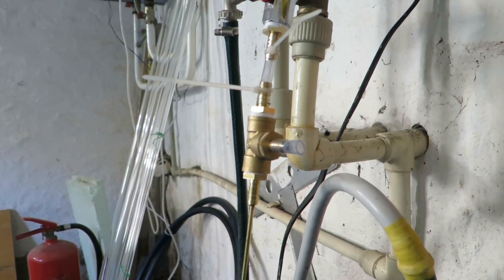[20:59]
Before we assemble this thing, we need to test this thing to check the pattern of the water stream or water jet and if there are some leaks. And if all is good, we can assemble this and test. Okay, I would call this good enough, so let's stick this inside the hole and we'll have to hold it, but it should work. Okay. If you really, really want to, you can probably try to clean up this edge. It should be flat.
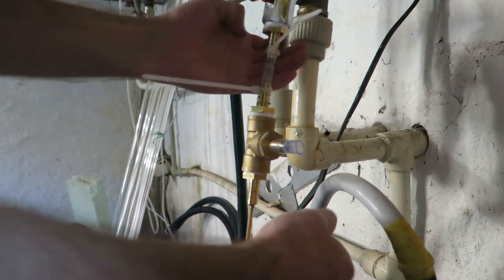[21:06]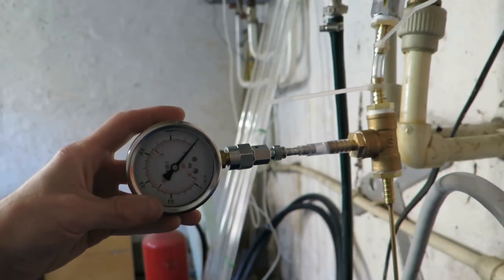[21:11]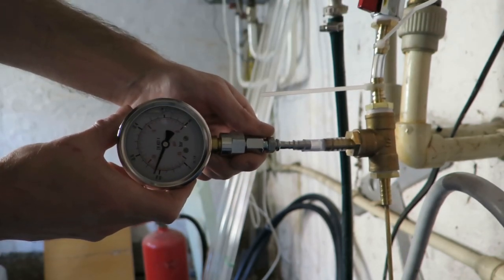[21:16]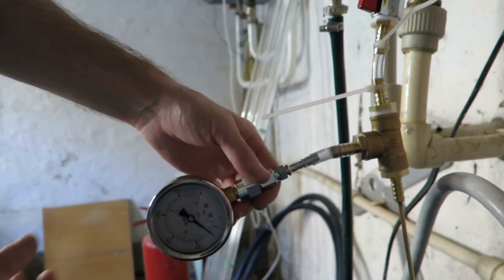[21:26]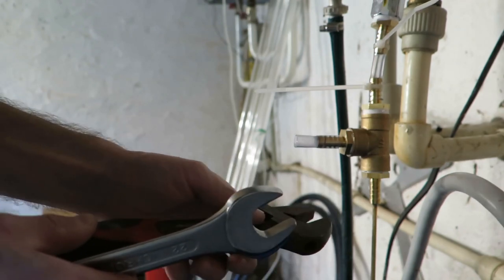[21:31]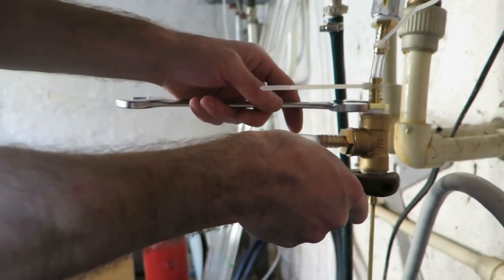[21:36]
Okay, so as you can see, I don't have this extension on the outlet here, so I'm not quite sure how it will perform without it. I haven't done measurement myself, just felt more suckier, if you know what I mean. Okay, so let's go. Pretty good, I would say. Okay, so let's crank on some nuts and see what happens. My guess is that absolutely nothing will happen.
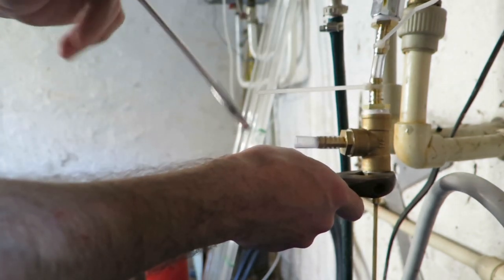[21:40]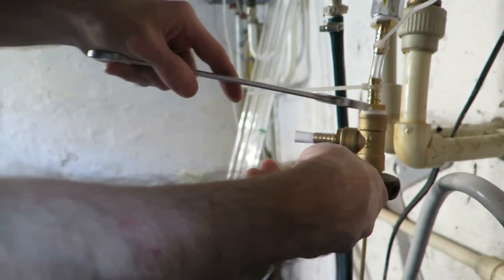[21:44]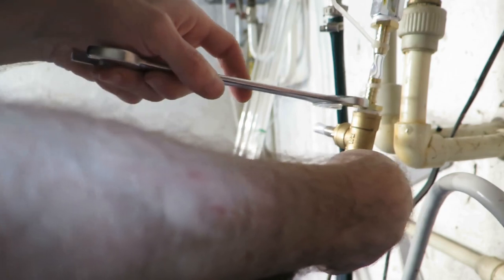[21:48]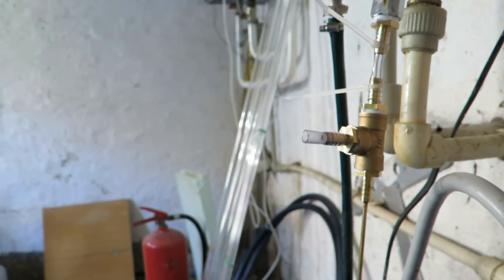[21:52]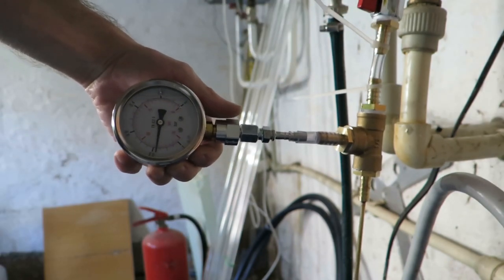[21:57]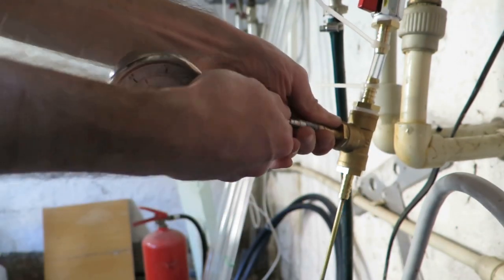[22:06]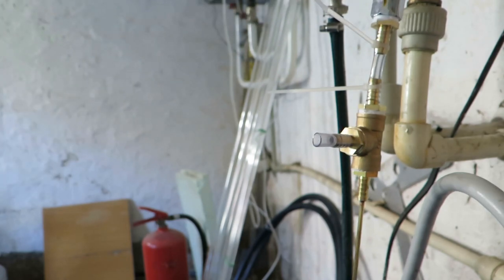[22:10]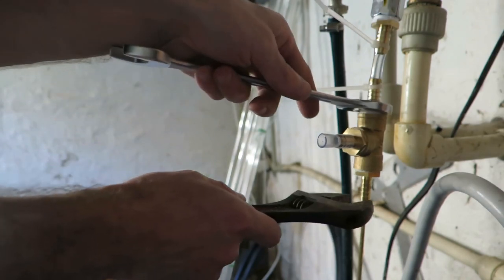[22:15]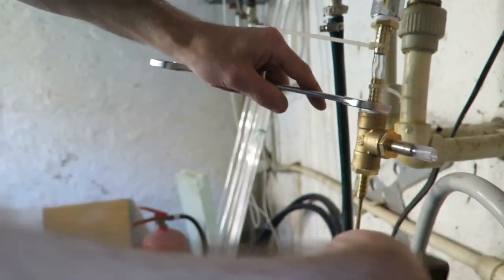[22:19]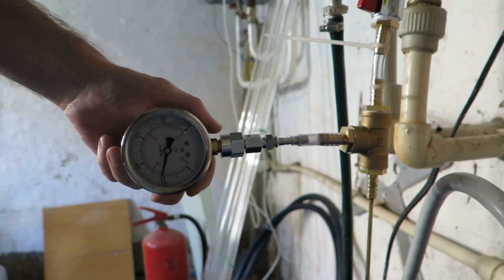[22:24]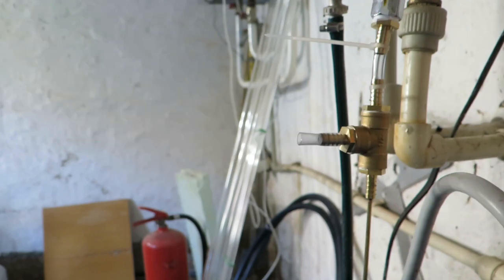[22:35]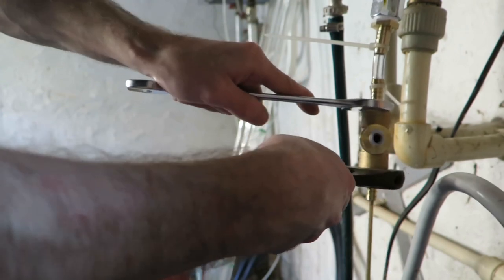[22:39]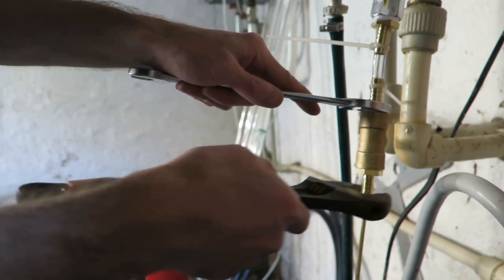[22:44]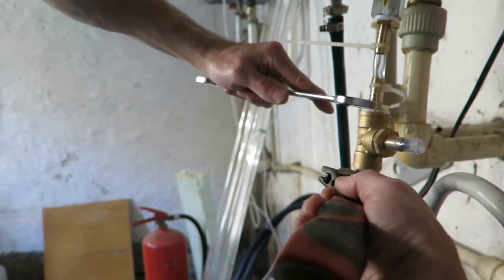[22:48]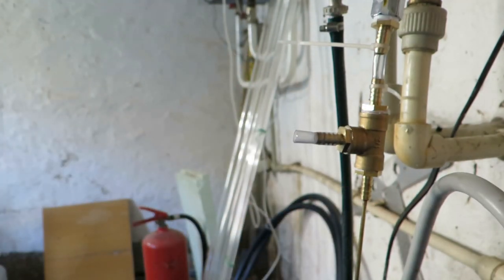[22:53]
Okay. Okay, it's not worse, so let's do it some more. No, I'm not sure, man. It was a little bit slower. Other way around. And let's try to add that extension and see what happens.
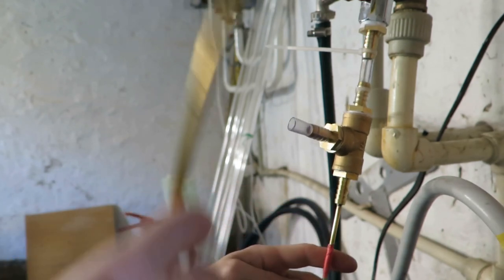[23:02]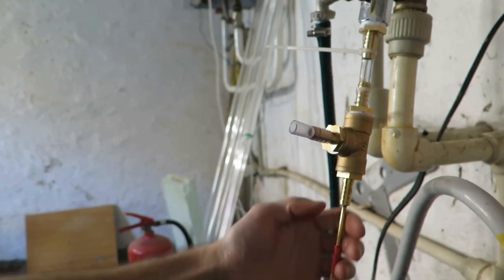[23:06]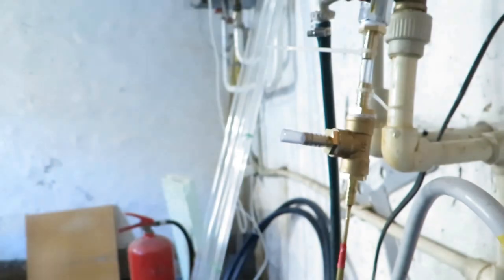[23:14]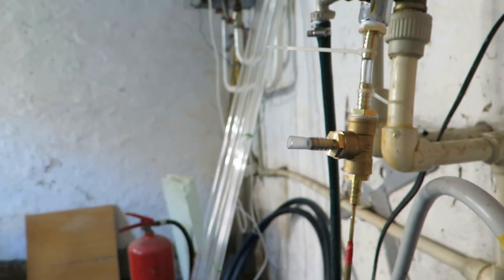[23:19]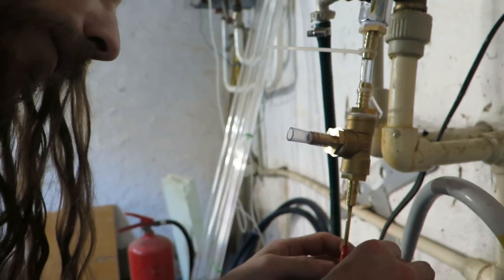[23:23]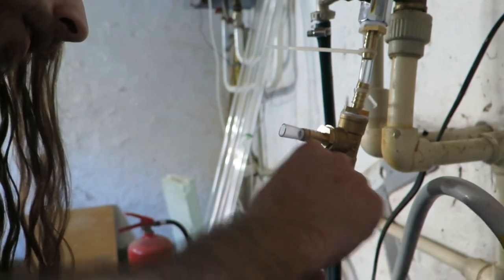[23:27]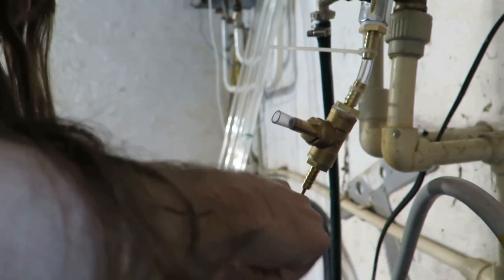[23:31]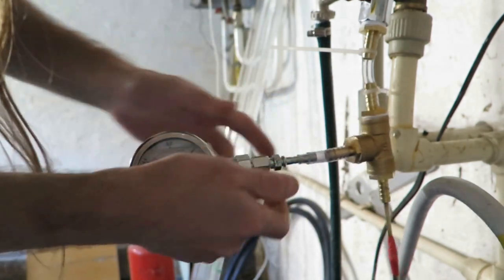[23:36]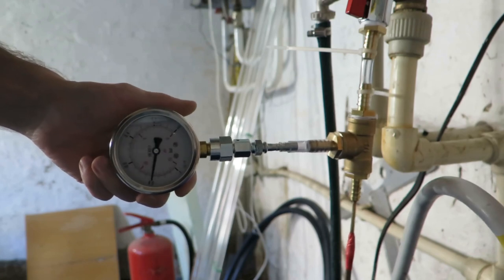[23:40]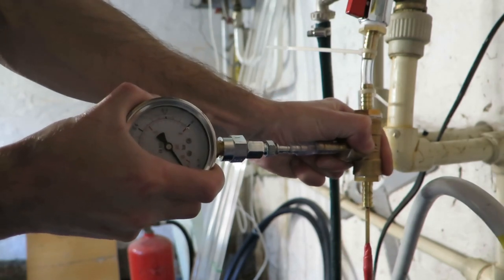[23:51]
Okay, so I added some electrical tape there and I will just push this onto that. So it should kind of seal well, I guess. And then I will wrap a bit more. Okay. Well, it's definitely quieter. And it looks like it's a bit slower. And the vacuum is a little bit higher.
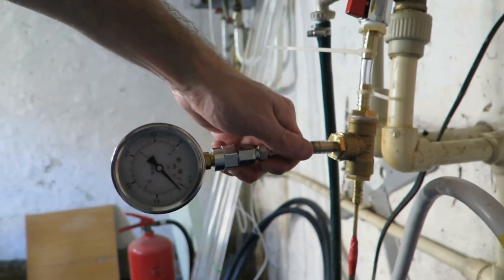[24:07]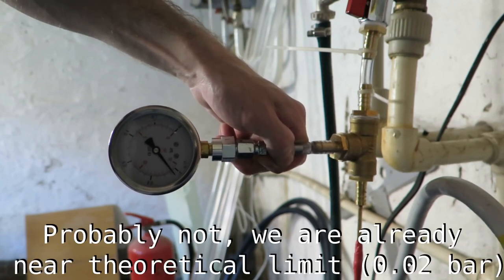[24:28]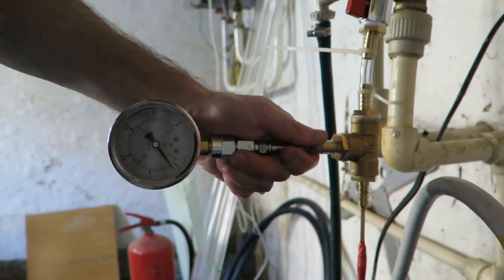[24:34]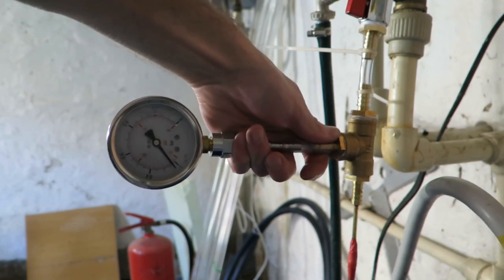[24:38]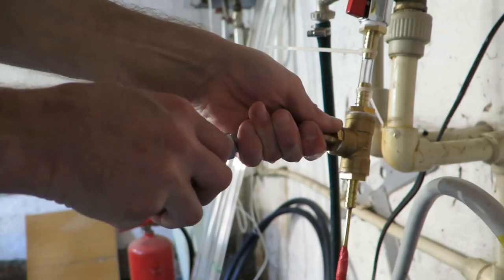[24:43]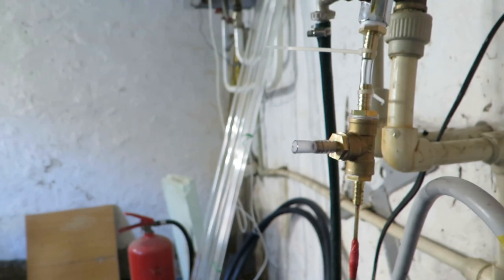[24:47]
Yeah, this one is probably the best I ever built. So it definitely helps to have the extension there. Question is if only a longer tube would help as much as this. Or maybe some different configuration if it will increase the performance somehow, but I'm not sure. Okay, so that's about all I have for you. Well, actually, it's not.
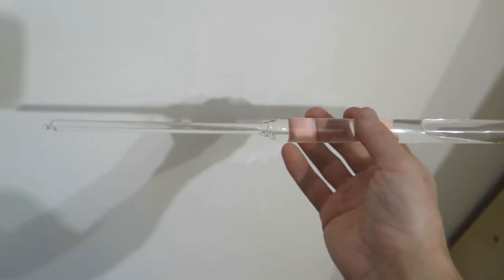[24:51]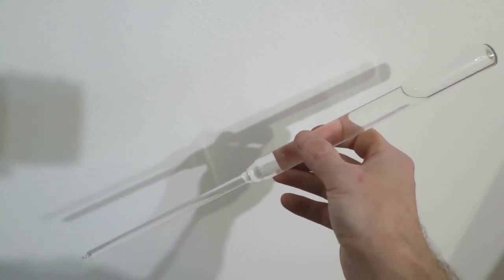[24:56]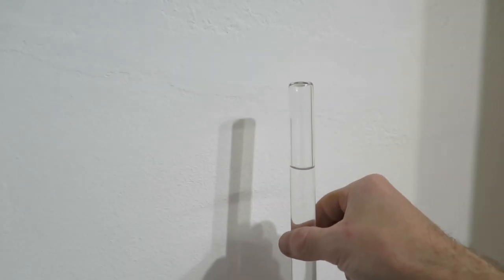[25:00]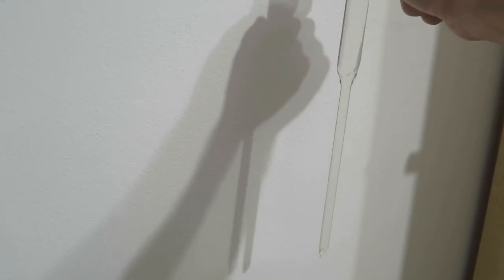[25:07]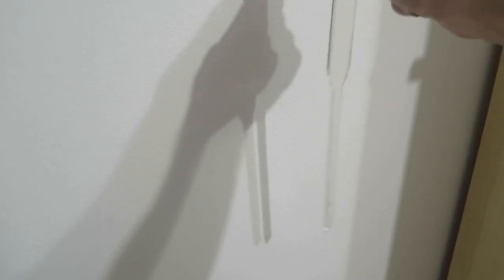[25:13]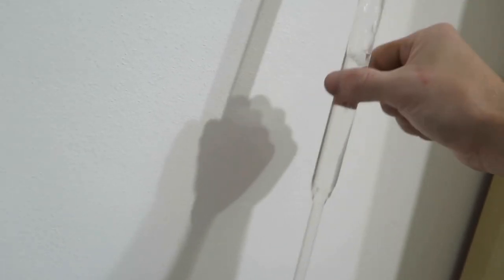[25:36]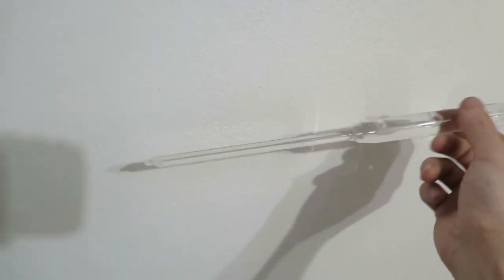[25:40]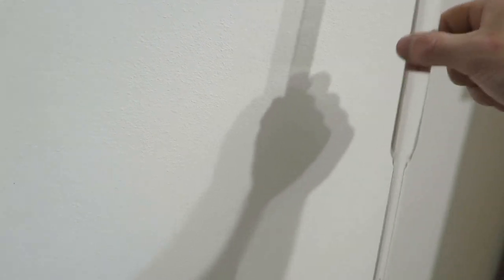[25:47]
So I made this thing with the pump that I made, the aspirator pump. And you can see here that it is an evacuated container, that it has just water in it. And when I do this, it is clinking inside. And you can see here, in this section, when I accelerate it downwards, there will be a bubble that is formed. Yeah, so that's about